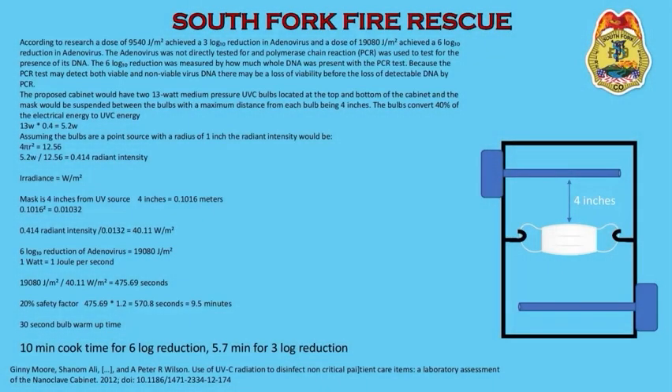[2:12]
I have an instructable for you that has pictures and written directions in it. And I'll also be showing you the device itself. Device for the sterilization of masks using UVC medium pressure bulbs. And you should be able to build this for less than 200 bucks, probably closer to 180 bucks.
We did the calculations for the cook time based on data from neutralizing human adenovirus using UVC. We have a safety factor built into the calculation just to make extra sure that we're killing everything. And even on the low end of the math, that should render a 6-log reduction in the mask, or 99.9999% reduction. As you know, with sterility assurance, the number can never be zero, but this is about the closest you can get to it.
So for this project, you're going to need two 13-watt, and that's really important because the math involved is based on the power of the bulb. So two 13-watt UVC germicidal drivers and bulbs, about half a sheet of CDX plywood, felt weather seal, 2 hinges, a latch, 4 hooks, some mirror material that you can likely find at your local glass shop, some mirror glue, and some black paint. It's really important that no light escapes from this box.
UVC and eyes don't get along very well. This is not something that you should look at. Think of it like a welding arc. If you're looking at it, you are causing eye damage. So we need to black out the box as best we can.
It's important to know that this device is built solely to sterilize our N95s. The principles behind this device dictate that the light has to touch all surfaces of the PPE. And since a mask is so vital in frontline PPE, and because of the shortage of them, we've built this device to help lengthen their useful life. We believe that we can get 10 sterilizations out of it before the material itself starts to degrade due to the UVC itself.
Here's a look at the math that we used to determine the length away from the bulbs that the masks had to be. As you can see down here close to the bottom, we did build in a 20% safety factor, which equaled 570.8 seconds or 9.5 minutes. We also allowed for a 30 second bulb warm-up time. So when you do all the math, you get a 10 minute cook time for a 6-log reduction, or a 5.7 minute cook time for a 3-log reduction. We went ahead and just went on the safe side. 10 minutes, 6-log reduction, that's pretty acceptable.
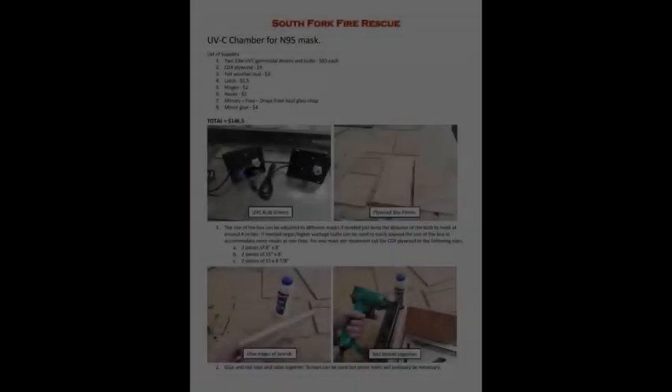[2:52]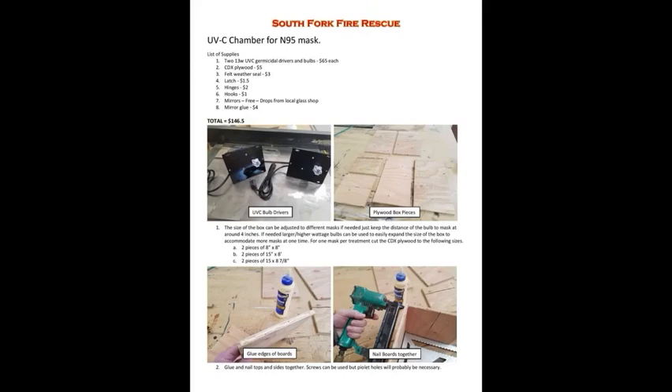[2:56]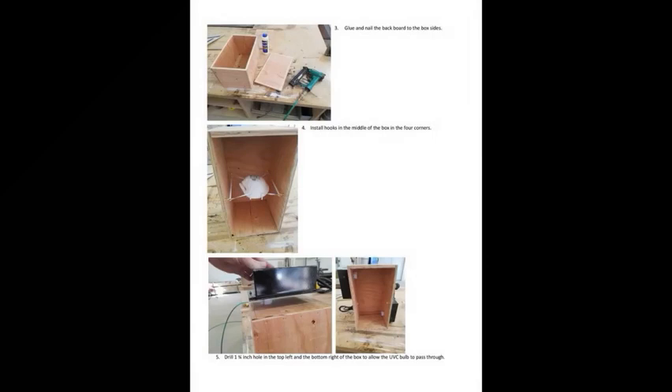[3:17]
Okay, on the first page of the instructables, you can see your materials list for a total of $146.50. The pieces of plywood that you'll need to cut are 2 pieces of 8-inch by 8-inch CDX, 2 pieces of 15-inch by 8-inch, and 2 pieces of 15 inch by 8 7/8 inch. Okay, on page number 2, it just shows the assembly of the box itself.
Make sure you use wood glue and finishing nails both, just to give your box a little bit more structural stability. And install the hooks to hold the mask into the 4 corners about halfway in the middle of the box. So they'll be equidistant from the drivers that we're gonna put in here in a little bit. Drill a 1 3/4 inch hole at the top left and the bottom right of the box so you can stagger your drivers and your bulbs.
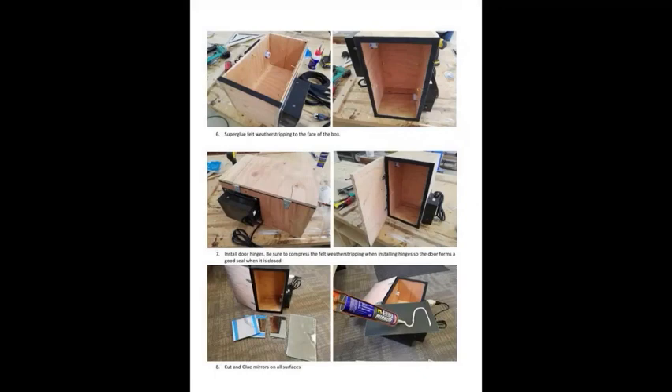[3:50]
On page 3 of the instructable, you can see where our chief has super glued the felt weather stripping to the face of the box. That's once again important to keep that light inside the box and prevent any sort of eye damage. You can see down here in the middle where he's installed the door hinges, and he's done that nice and tight so that the lid presses very tightly against the box, keeps all that light in.
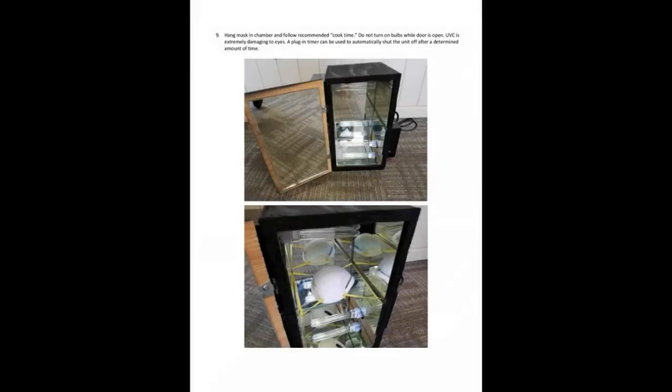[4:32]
And then down there at the very bottom, he's just used some drops from a local glass shop for the mirrors, and he's cut them to size. Not really any science there, just make sure you get most of the inside of that box covered with the mirror. Okay, here on the last page, you can see the completed product. Go ahead and follow the recommended cook time for a log 6 reduction.
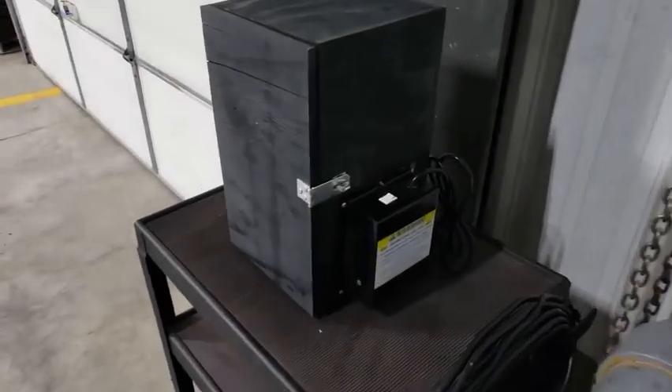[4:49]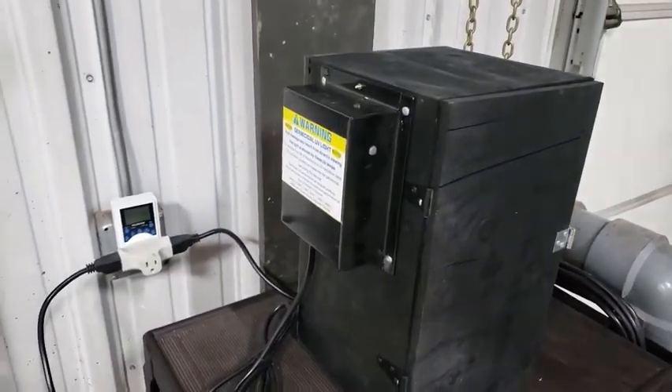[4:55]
We really hope that this instructable helps you guys out. If you have any questions about the assembly or anything like that, feel free to get a hold of us at any time. Okay, and here's our final product. We have a driver mounted on the bottom here. On the other side, we have the driver mounted on the top. And we have a nice tight seal all the way around the box.
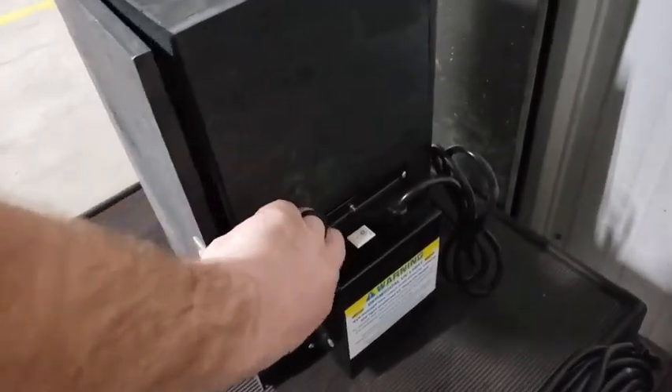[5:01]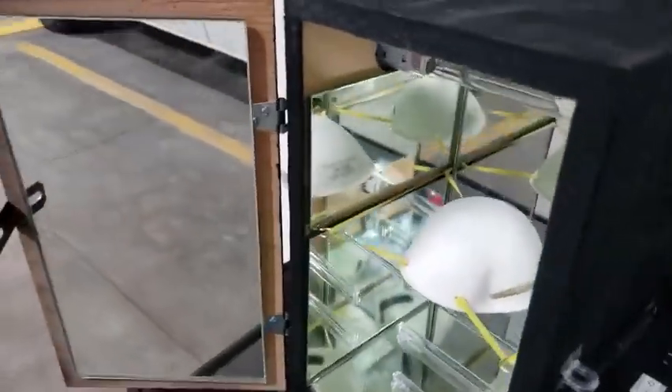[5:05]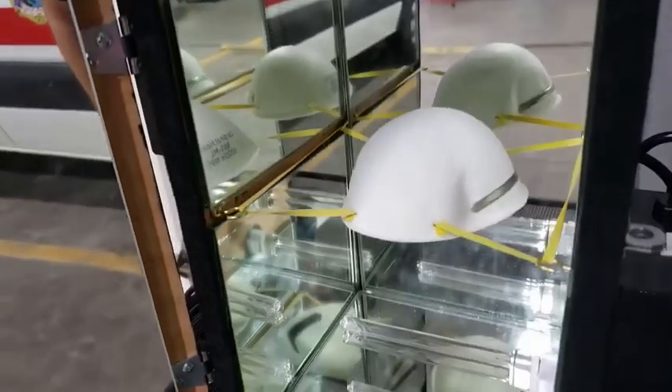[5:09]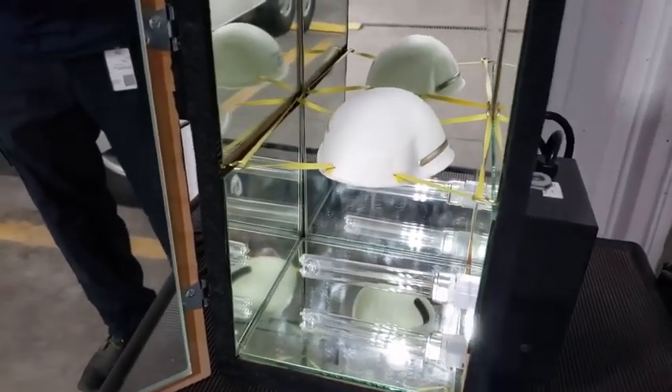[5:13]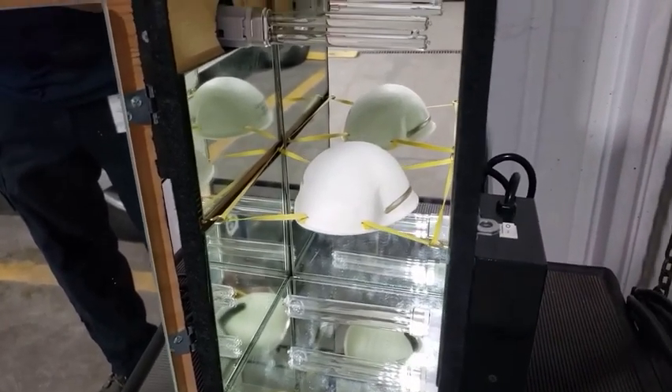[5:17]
Open our box up. And you can see how it's completely lined with mirrors so that we get that light in all little areas that we can find. And our mask is hanging right there in the middle. Go ahead and follow your recommended cook time of about 10 minutes for the log 6 reduction.
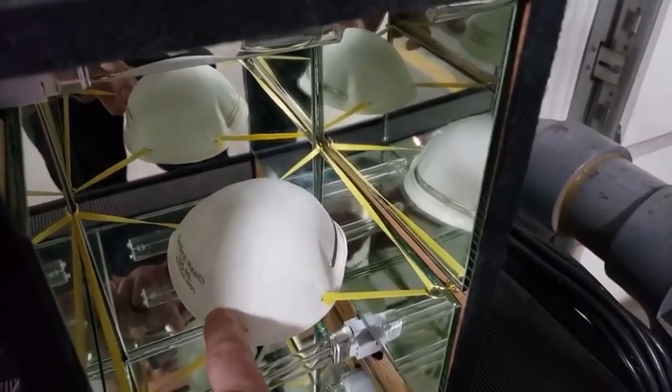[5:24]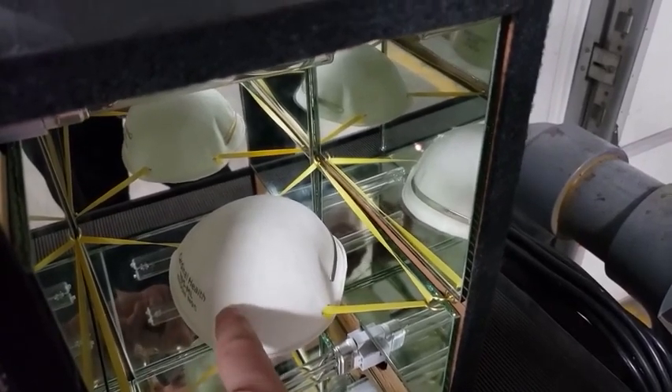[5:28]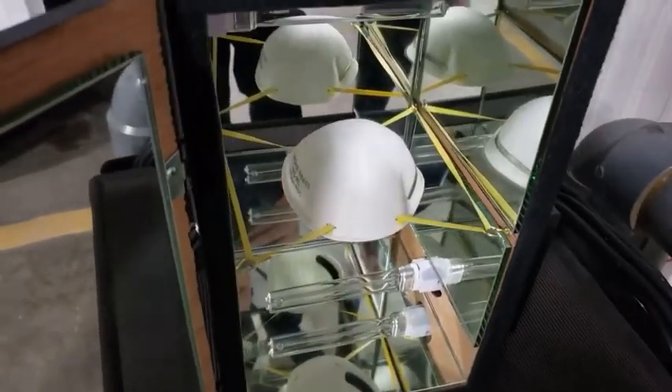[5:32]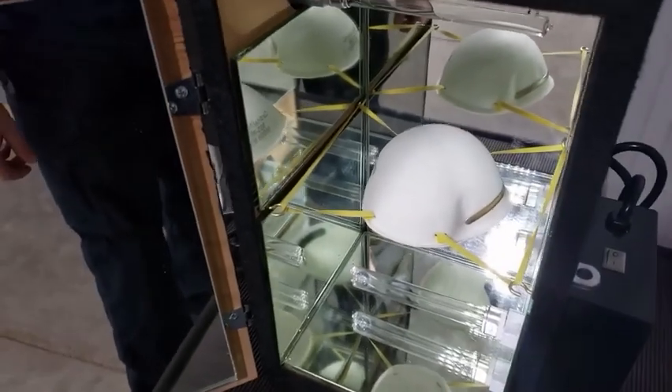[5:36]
And what we're doing is down here towards the bottom of the mask, we have our initials. So we know whose mask it is. And then we just put a tally mark every time we run it through the sterilization cycle. And then when we get to a maximum of 10, we can check it and see how the material looks, because the UVC will degrade the rubber and also the fiber in the mask.
Thanks for watching, guys. I hope that this helps you through the shortage. Obviously, we don't advocate that this is something you should be doing on a regular basis. However, in the midst of this, we're forced to not really look at what something was designed to do, but we're wanting to know what it can do. So if we can utilize this device to stretch the life of our N95s, that's just one extra step of protection that we can use to avoid transmission.
Always remember to wear your PPE appropriately, especially in today's world. Take care of each other. Look out for one another. Don't take this stuff home to your family. Decon where it's appropriate. Take all precautions to make sure that you minimize contact of any sort.